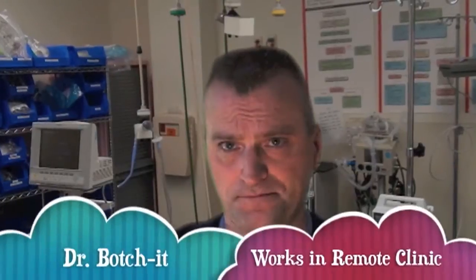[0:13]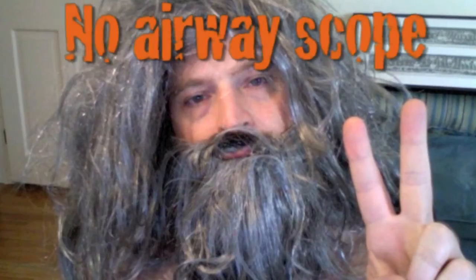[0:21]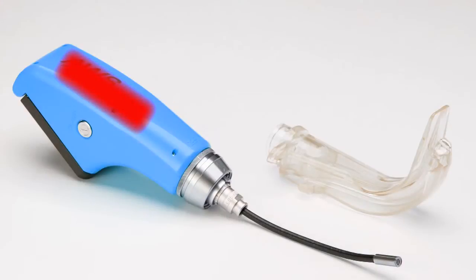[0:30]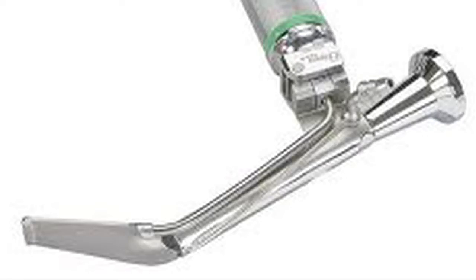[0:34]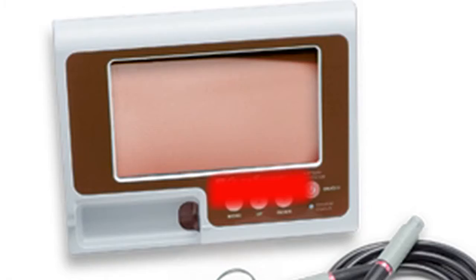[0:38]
I recently went to the USC conference out in California, and one of the best things they had there was a room full of every possible difficult airway device you could imagine. And they were all really, really impressive, and they all worked really well. But they were also pretty expensive, most of them anyway.
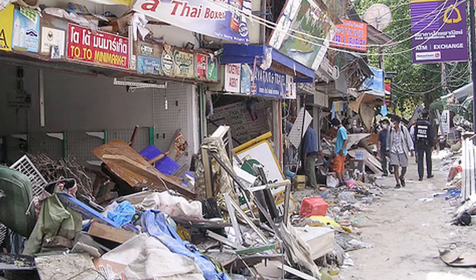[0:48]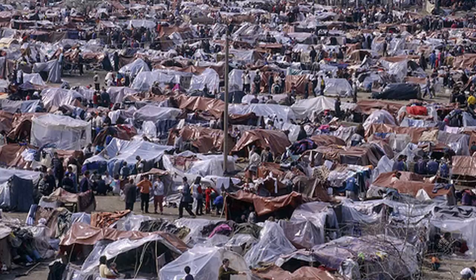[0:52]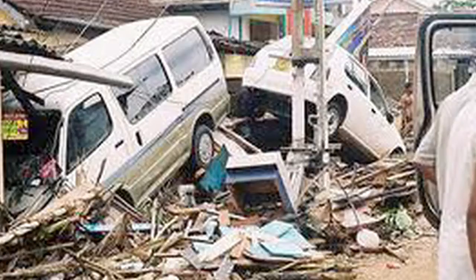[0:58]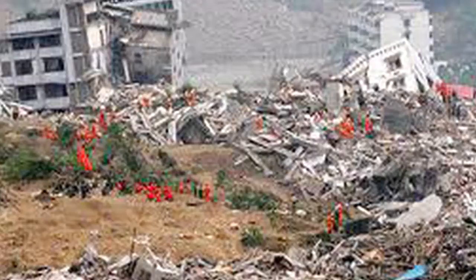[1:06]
And I met a lot of people who did work in Africa and Haiti and other parts of the third world where expensive devices like these are just not affordable and not accessible. So I started to wonder if you could make a theoretical airway device out of supplies that you would find in any local clinic in almost any part of the world.
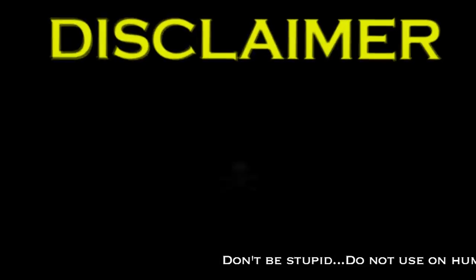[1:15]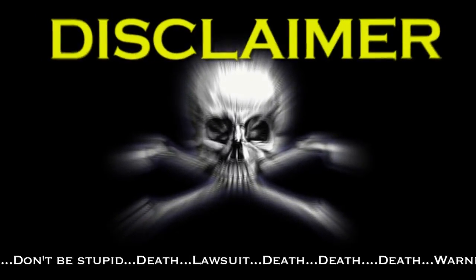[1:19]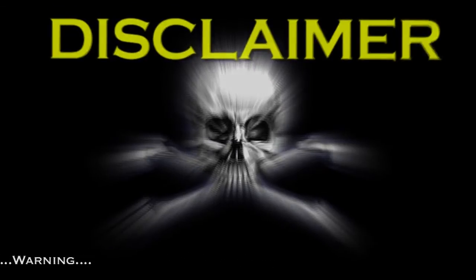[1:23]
Note that I use the word theoretical. This is an experimental procedurette. You should not use it on real living people. And if you do, and if you kill someone, it's not my fault, and you're an idiot.
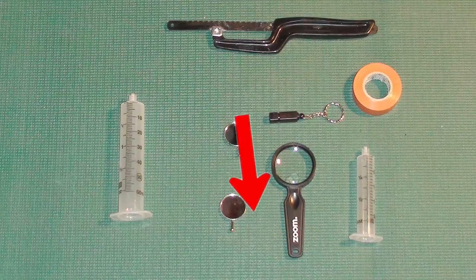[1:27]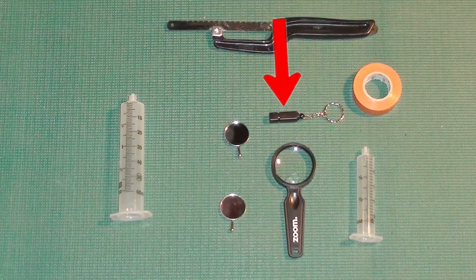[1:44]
The things you would need would be two syringes of different sizes, a 60 cc and a 30 is what I used here, two dental mirrors, or small mirrors from a bike shop or something like that, a hacksaw, a small LED flashlight, and a bunch of tape. You'd also need some epoxy and some hot water, and I don't know what the magnifying glass is doing there.
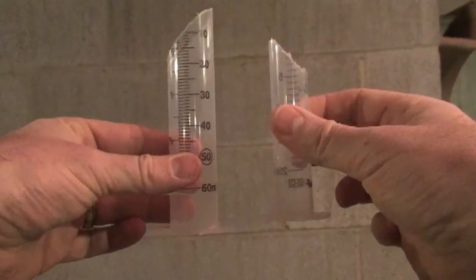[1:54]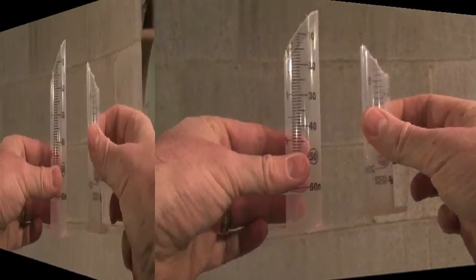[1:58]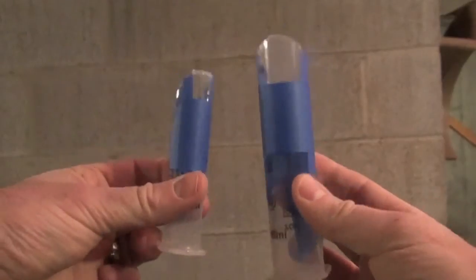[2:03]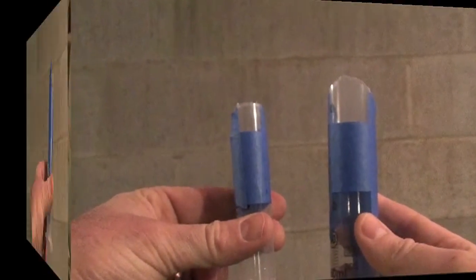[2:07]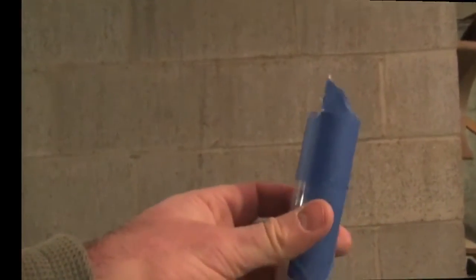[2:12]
So the first step is to cut the ends off of each syringe at a 45-degree angle with the hacksaw. Next, use some tape and mark out a little notch at the end of each syringe where you cut it, and cut that notch out with the hacksaw. So you end up with two syringes, big and small, that both kind of look like Batman's head a little bit.
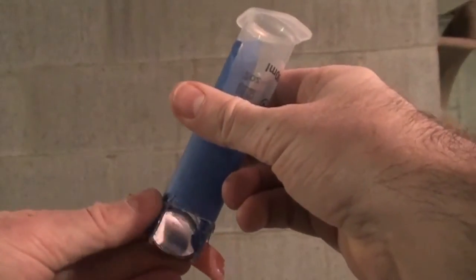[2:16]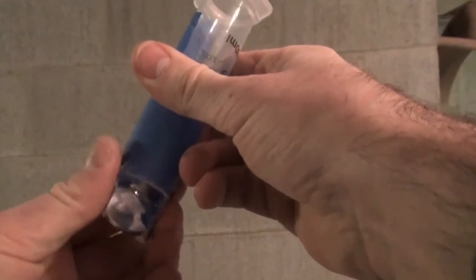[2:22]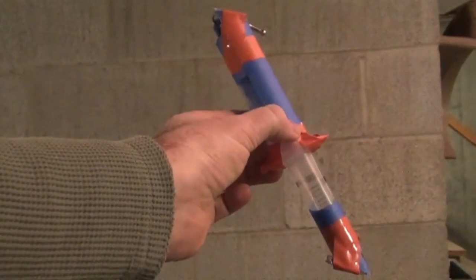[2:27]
Then you're going to take the two mirrors and fix them to the back of the 45-degree angle that you cut earlier. And take both syringes and join them together base to base. This is where you'd use your epoxy or some epoxy putty. And you basically formed a periscope.
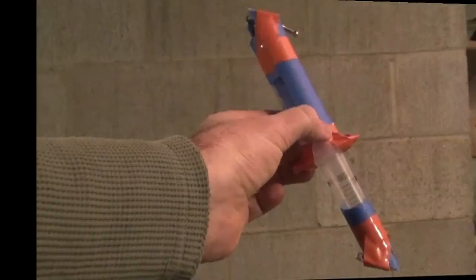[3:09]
So here's what you've got from top to bottom. You've got a dental mirror on one end at the angle you cut on the big syringe, and the base of that big syringe is glued to the base of the smaller syringe, the 30 cc syringe, and down at the other end, you've got the other dental mirror. So the way it will work is that light will go in the aperture at the small end, bounce off the mirror, travel up through the lumen of both syringes, hit the mirror at the large end, and bounce out at a right angle to that mirror through the aperture where you can see it.
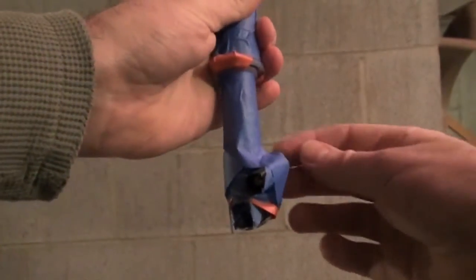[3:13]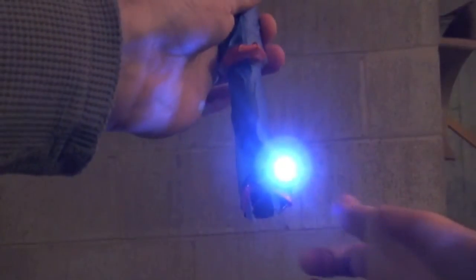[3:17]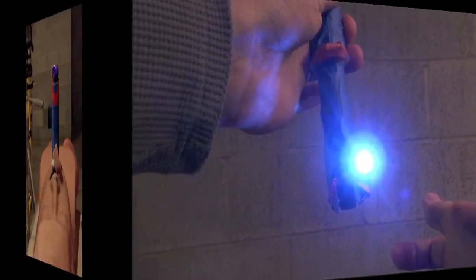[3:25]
You should then take the LED flashlight that you found and tape it to the bottom of the scope at the narrow portion that's going to be going into the patient's mouth. This is going to be your light source so you can visualize the patient's airway anatomy.
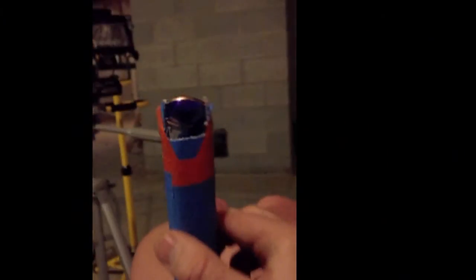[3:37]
So if this was an actual patient, you'd first swish a little hot water around inside the periscope just to heat the mirrors up so they don't fog. And then just put it straight back into the patient's mouth, and when you look through the aperture at the top, you can clearly see the cords right there.
The image is a little unusual here because I have to use my iPhone. The autofocus on my regular camera gets thrown off by the reflections. But when you use your own naked eye, you can really see quite well.
The next step would be to take an ET tube with a stylet in it and come from the side of the patient's mouth, not through the periscope. And oh, there it is. You can see the tip of the ET tube right there by the cords.
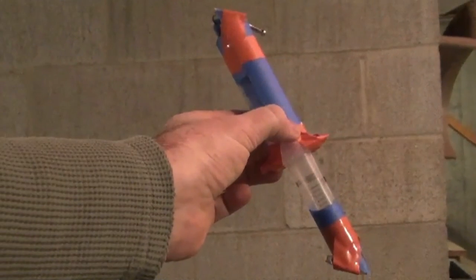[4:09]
The day is saved. So, once again, this is purely experimental, but there's probably ways to improve upon it, and I hope that maybe someday somebody can do something good with this.